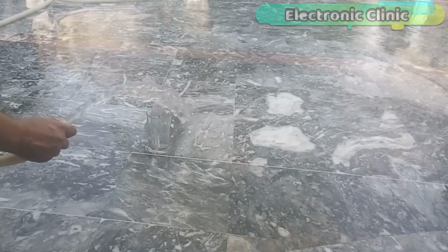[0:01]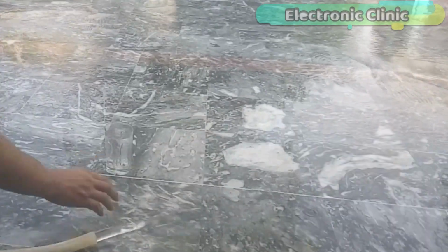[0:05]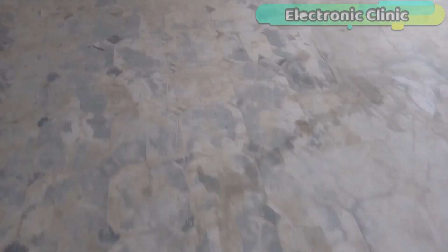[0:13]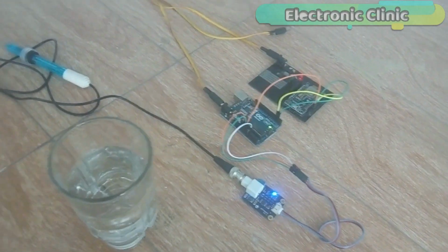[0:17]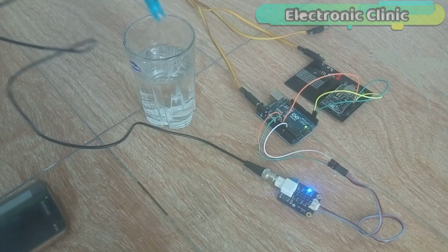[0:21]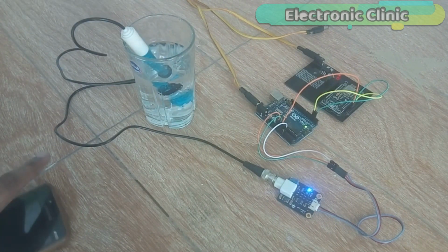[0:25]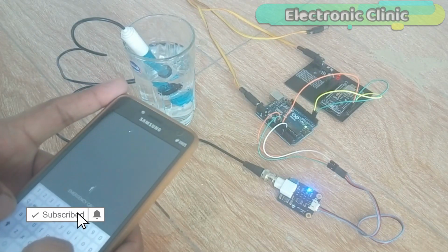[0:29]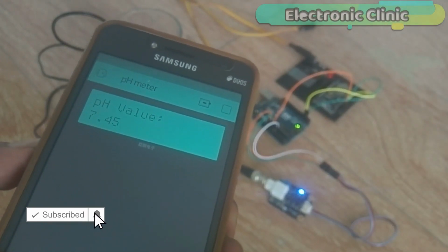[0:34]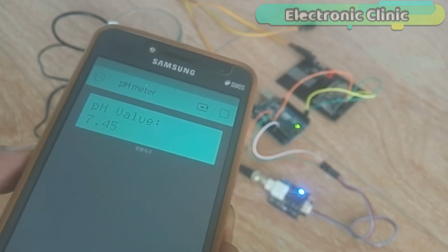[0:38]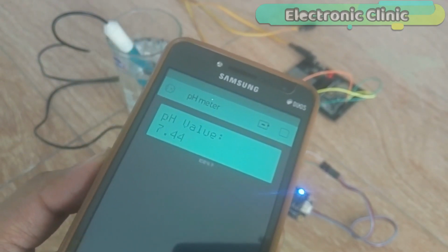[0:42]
In today's episode, you will learn how to make an IoT-based water quality monitoring system using Arduino, pH sensor, Nodemcu ESP8266 Wi-Fi module, and Blynk application. This is an IoT, Internet of Things-based project. The water quality can be monitored from anywhere around the world.
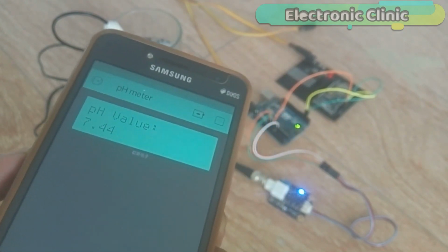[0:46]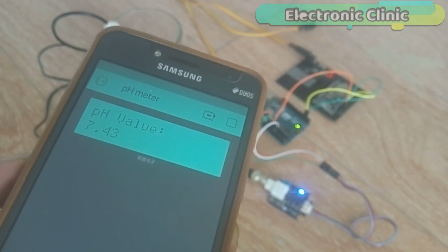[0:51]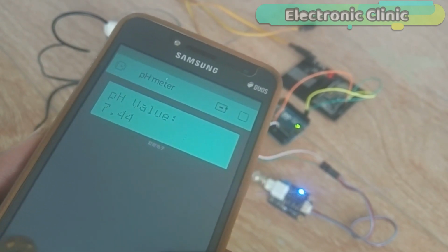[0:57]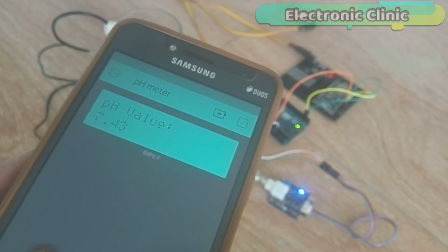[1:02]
In this episode, I will practically explain how to measure the pH value of the well water. And I will also explain whether the water under test is good or bad for health. In this tutorial, you will also learn how to use the 16x2 LCD widget in the Blynk application.
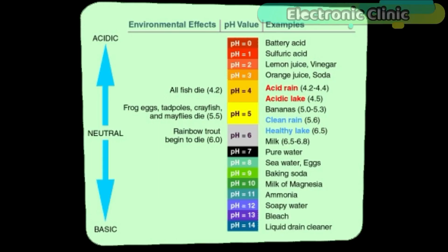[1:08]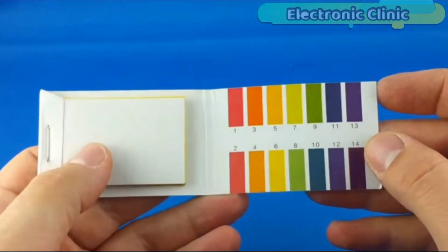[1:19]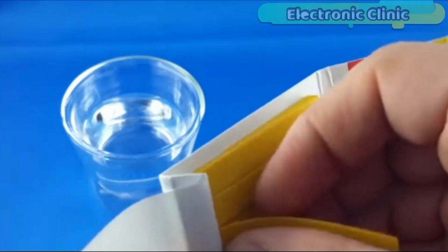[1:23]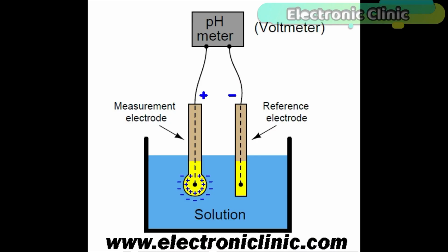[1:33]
This is version 2 of the pH sensor water quality monitoring system. While in version 1, I covered the extreme basics, like for example, what is pH, how a pH sensor works, how to measure the pH value of different liquids. In version 1, I also explained how to calibrate the pH sensor. So if you are using a pH sensor for the first time, then I highly recommend you first watch version 1 and then you can resume from here.
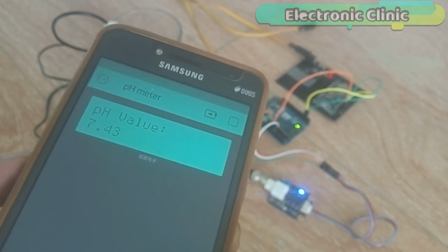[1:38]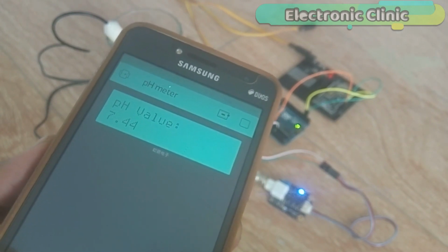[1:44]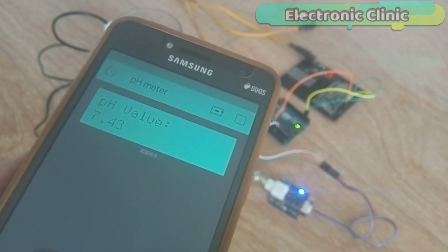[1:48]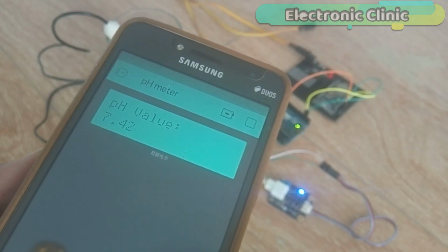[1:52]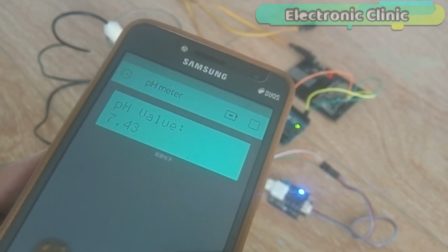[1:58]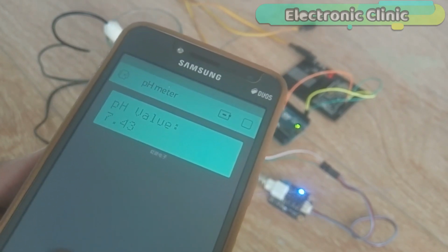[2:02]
In this episode, we will cover number 1, complete circuit diagram, number 2, pH sensor unboxing, number 3, pH sensor pinout, number 4, pH sensor and Nodemcu ESP8266 Wi-Fi module interfacing with Arduino. Number 5, Arduino and Nodemcu programming, and finally number 6, testing. Without any further delay, let's get started.
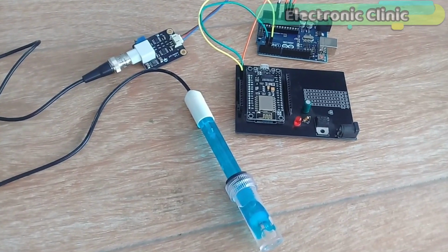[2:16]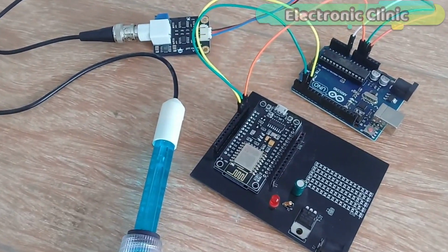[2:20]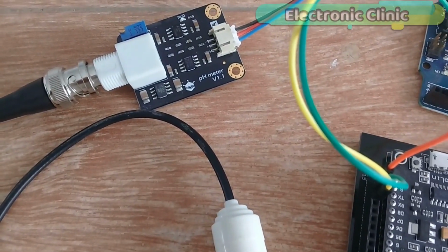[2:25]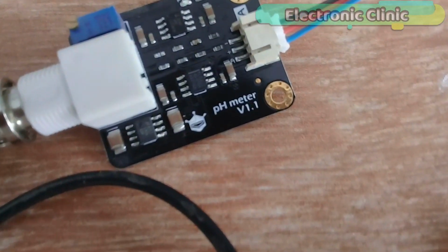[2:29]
This is the circuit diagram of the Nodemcu ESP8266 Wi-Fi module power supply. This schematic is designed in CadSoft Eagle 9.1.0 version. This is a 5-volt regulated power supply, which is used to power up the Nodemcu ESP8266 Wi-Fi module. This power supply is based on the famous LM7805 voltage regulator.
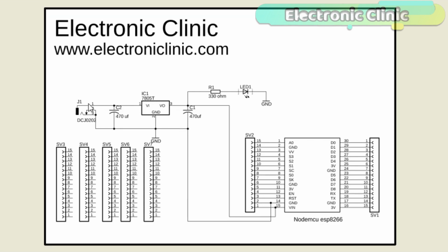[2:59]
J1 is the female power jack, and this is where we connect a 12-volt adapter, a battery, or a solar panel. Two 470 microfarad capacitors are connected at the input and output sides of the voltage regulator. A 330 ohm resistor is connected in series with a 2.5 volt LED. This is a current limiting resistor. The output of the voltage regulator is connected with the VIN pin of the Nodemcu ESP8266 Wi-Fi module, and the ground is connected with the ground.
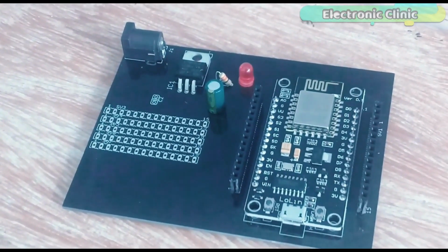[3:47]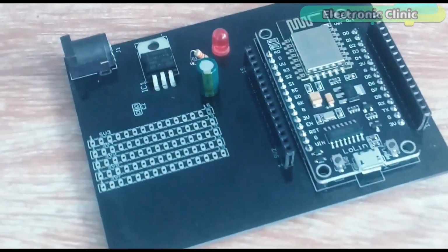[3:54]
SV1 and SV2 are the female headers. The connections of the Nodemcu module and pH sensor will be explained during the interfacing. This is the final power supply board designed for powering up the Nodemcu ESP8266 Wi-Fi module.
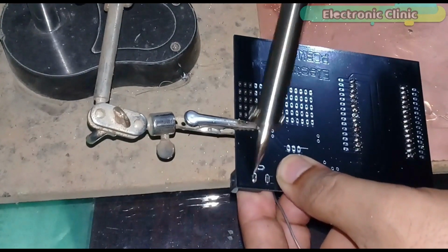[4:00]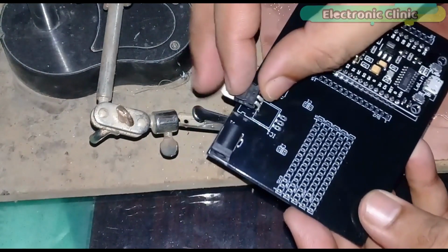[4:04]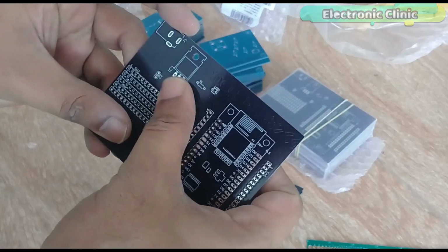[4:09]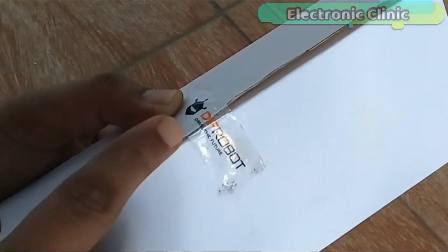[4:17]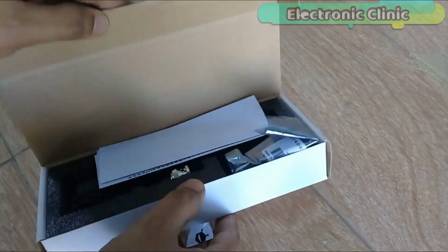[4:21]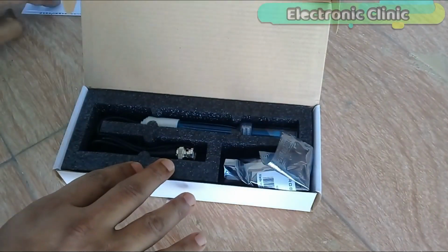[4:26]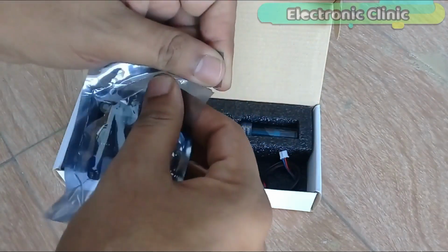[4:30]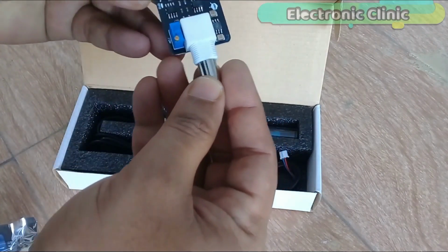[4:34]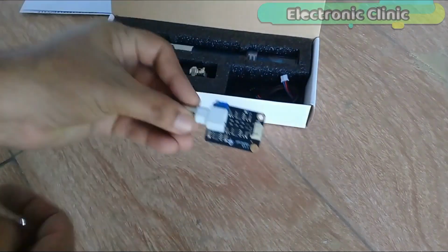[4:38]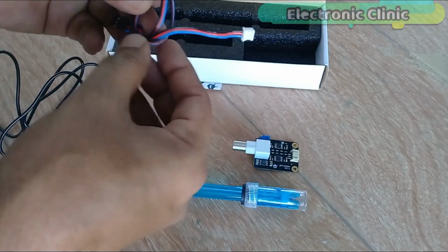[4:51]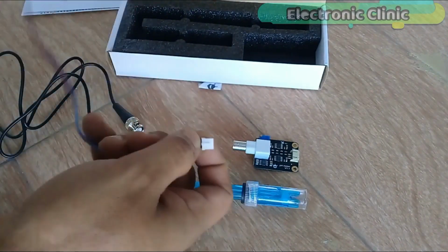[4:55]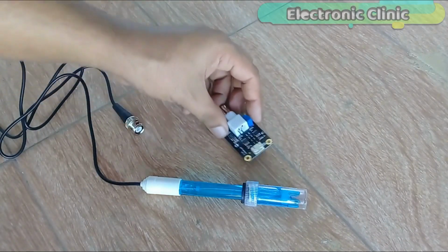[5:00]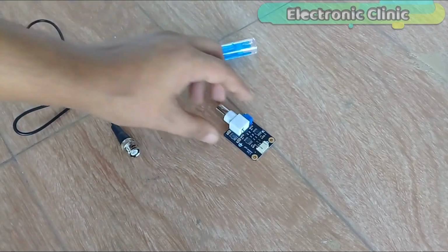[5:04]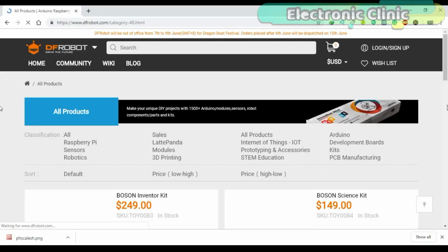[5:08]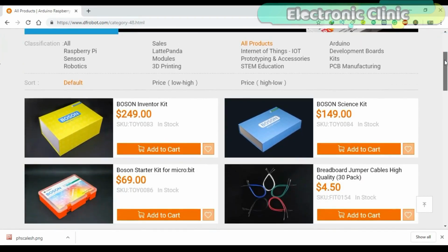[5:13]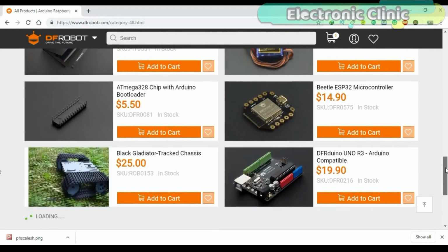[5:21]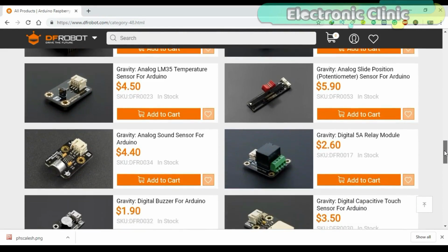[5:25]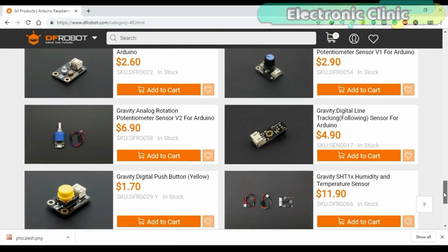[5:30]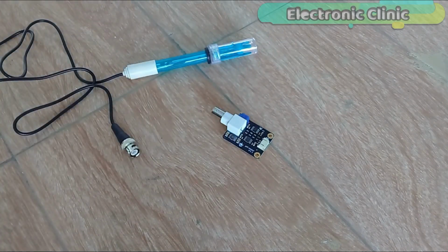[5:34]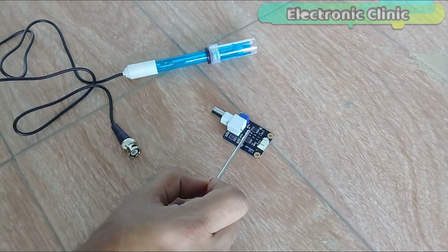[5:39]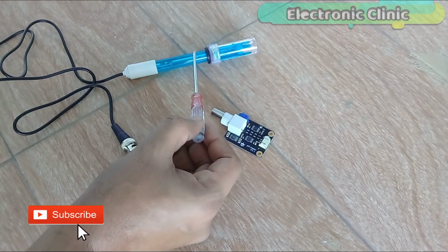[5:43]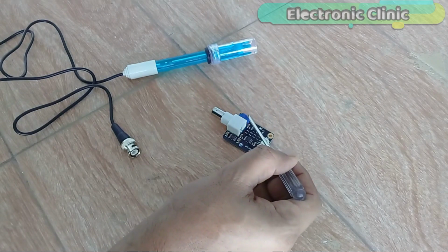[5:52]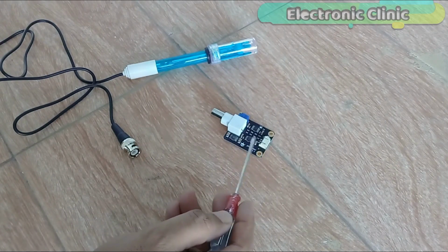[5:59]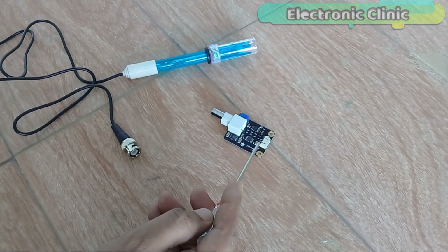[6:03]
This pH sensor kit is best for measuring the water quality and other parameters. It has an LED which works as the power indicator, a pH sensor, a BNC connector, a variable resistor which is used for the calibration, which I will explain during the testing, and a PH2.0 sensor interface circuit. Its interfacing with the Arduino is really simple.
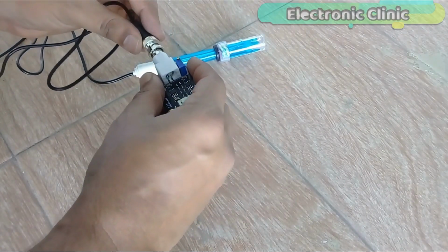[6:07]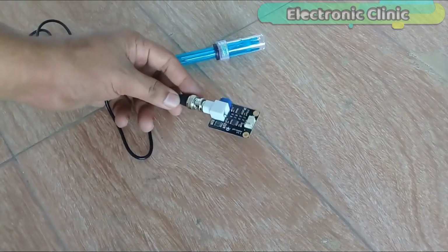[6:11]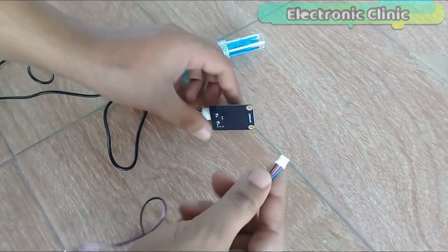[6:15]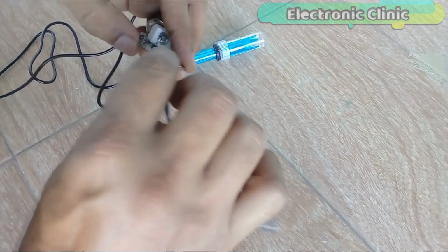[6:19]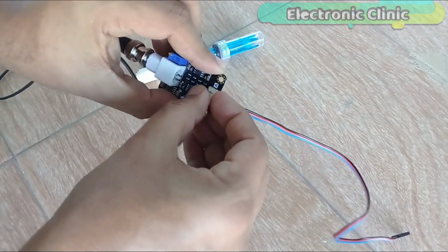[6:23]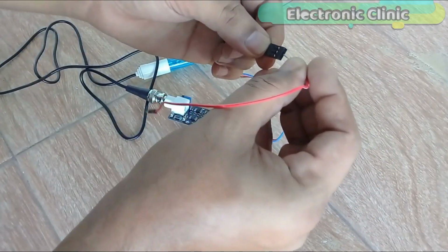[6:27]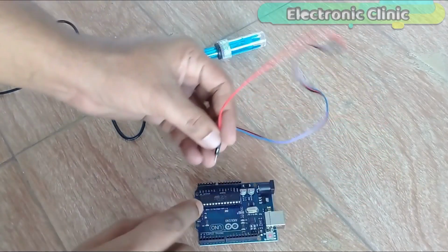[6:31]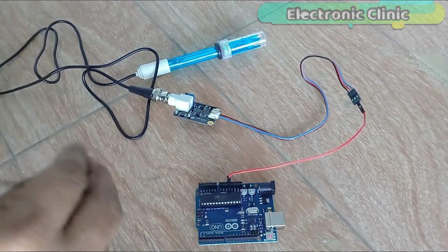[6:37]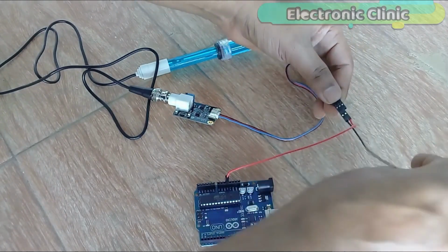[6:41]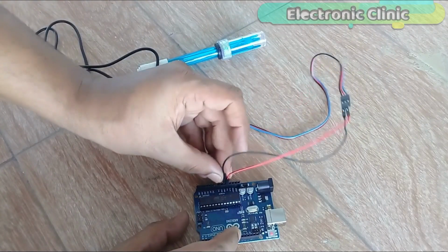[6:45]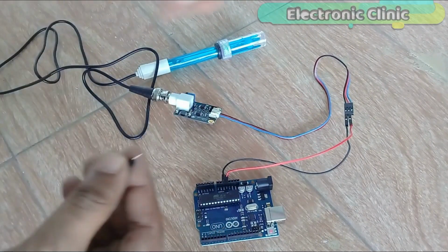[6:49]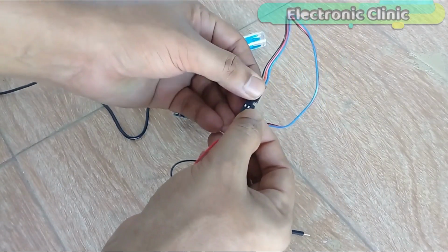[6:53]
Connect the red wire with the Arduino's 5V. Connect the black wire with the Arduino's ground. Connect the blue wire with the Arduino's analog pin A0.
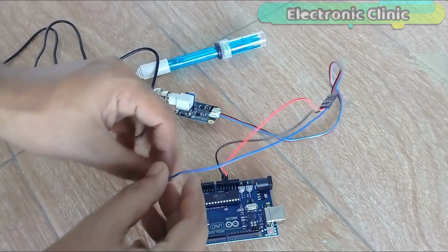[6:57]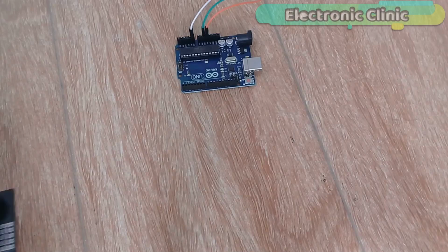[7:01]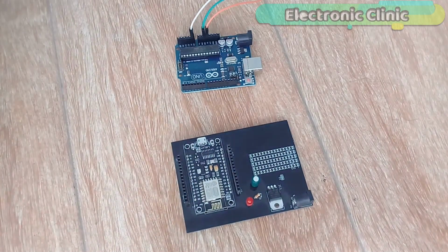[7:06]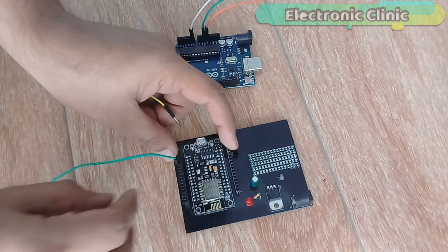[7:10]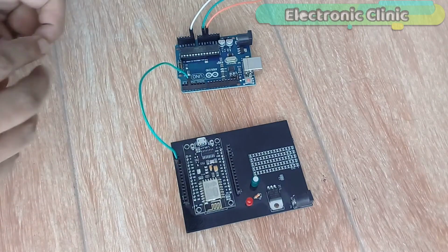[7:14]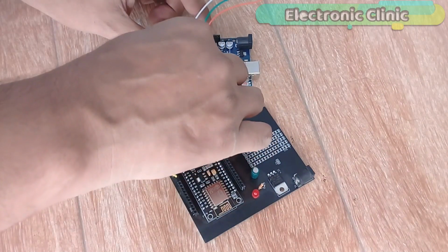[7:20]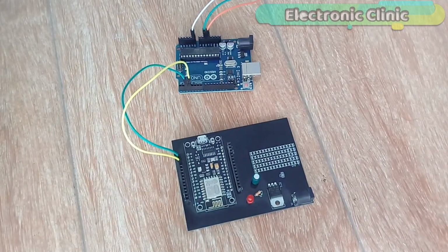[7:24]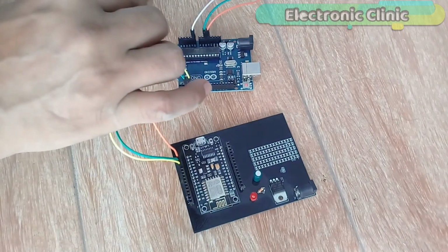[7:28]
Connect the TX and RX pins of the Nodemcu ESP8266 Wi-Fi module with pin number 2 and pin number 3 of the Arduino. Connect the ground pin of the Nodemcu module with the Arduino's ground.
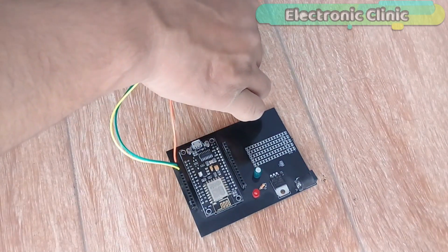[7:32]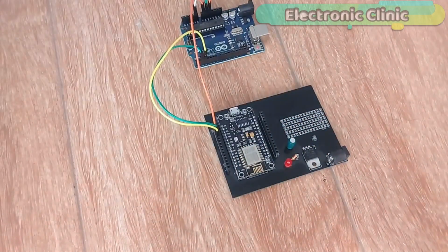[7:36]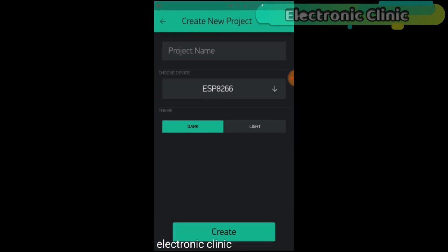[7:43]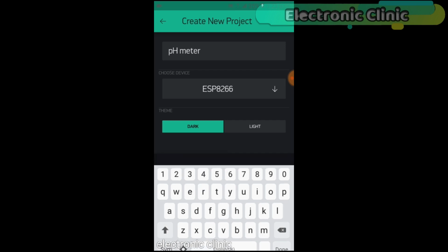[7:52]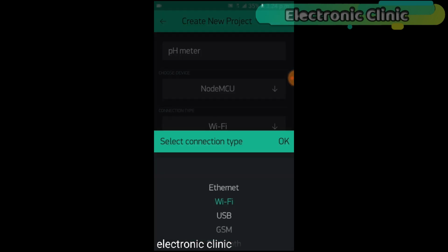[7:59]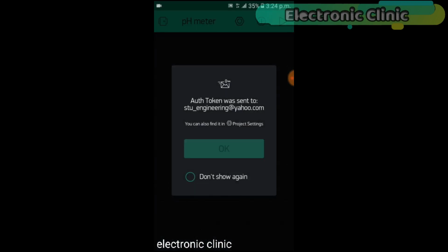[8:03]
First of all, open the Blynk application. Set the project name as pH meter. Click on choose device and select Nodemcu. Make sure you set the connection type to Wi-Fi. Then click on the create button. An authentication token will be sent to your email ID, which will then be used in the programming. Simply copy and paste it in the programming.
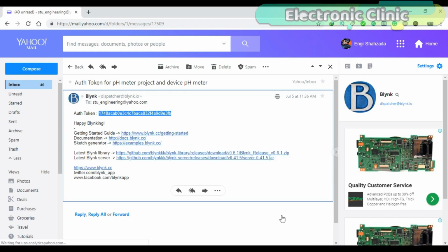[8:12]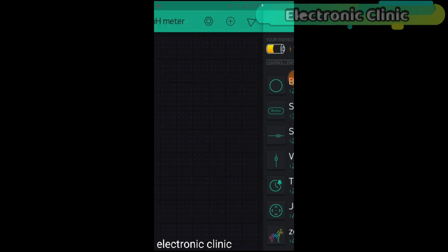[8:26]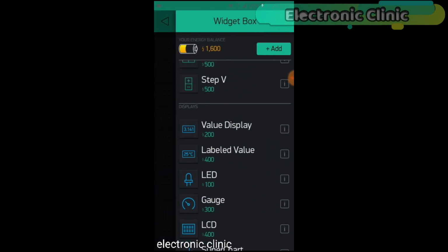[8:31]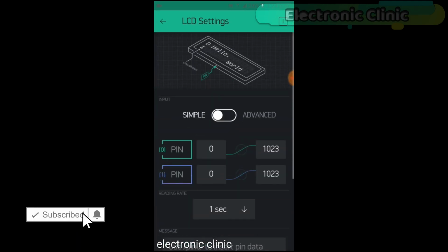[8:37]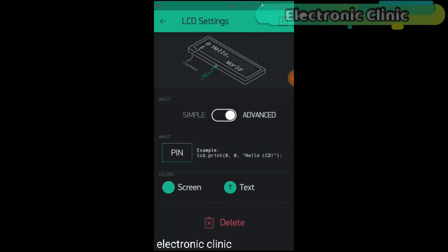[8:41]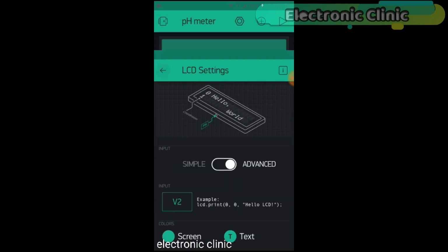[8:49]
Now click on the screen and search for the LCD widget and edit.
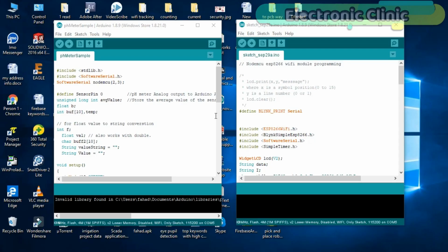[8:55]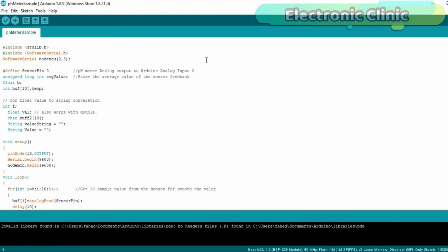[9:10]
Our application is ready, and now let's discuss the programming. In this project, two programs are used. This program is written for the Arduino, while this program is written for the NodeMCU ESP8266 Wi-Fi module. Let's first of all start with the Arduino programming.
This is the same program I used in version 1 of the pH sensor water quality monitoring system. This time I made a few changes. I added these two libraries. The stdlib.h library has a standard function which is used for converting the float value into the string value, while the softwareserial.h library is used for creating multiple serial ports.
As I always said, never use the Arduino's default serial port for communication with other devices. As you know, in Arduino we have only one serial port, which is on pin number 0 and pin number 1. The Arduino's default serial port should only be used for debugging purposes. Now the question is, if we are using the Arduino's default serial port for debugging purposes, then how will we connect the NodeMCU module with the Arduino?
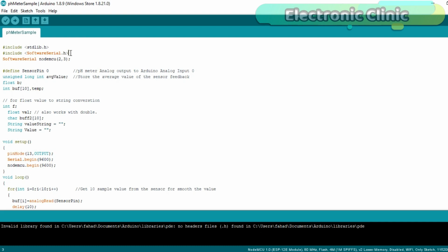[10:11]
Well, no worries at all. We can use the software serial library for creating multiple serial ports. So that's the reason I added the software serial library and defined a serial port with the name NodeMCU on pin number 2 and pin number 3 of the Arduino. So the NodeMCU module TX and RX pins will be connected with the Arduino's pin number 2 and pin number 3.
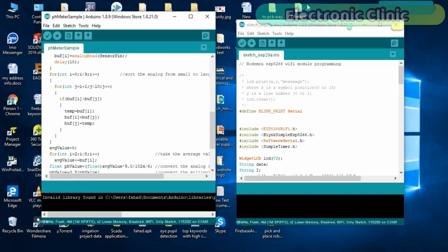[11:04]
Another change that I made to the program is I added this function which is used to convert a float value into the string value. Then I added the string value along with the comma which is used as the delimiter. Finally, the string message is sent to the NodeMCU module, and at the end we empty the string for new data. Now let's discuss the NodeMCU programming.
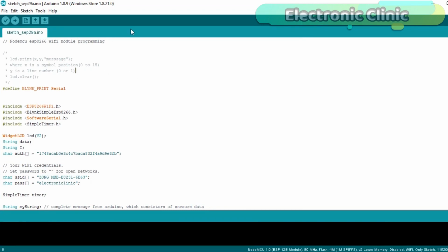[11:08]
Before you start the programming, first of all make sure that you download all the necessary libraries and you install the NodeMCU board. The link is given in the description. Data to the LCD widget is sent through the virtual pin V2. Then I defined two variables of the type string. This is the authentication token which was sent via email. This is the name of the Wi-Fi router and this is the password.
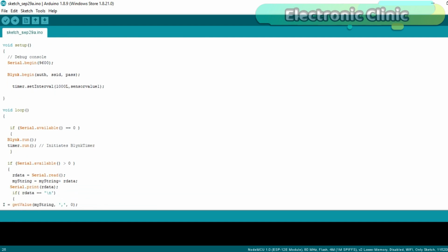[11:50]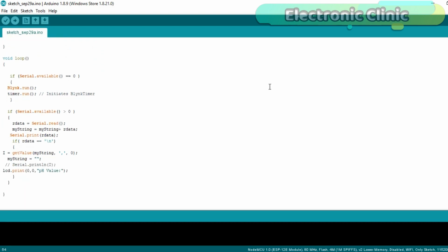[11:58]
Most of the variables and instructions used in this program are exactly the same as explained in my previous IoT based projects. Sensor value 1 is a user defined function and is executed every 1 second. Then starts the void loop function. This condition means if no data is received from the Arduino, then simply keep running these two functions. What this condition means, if the NodeMCU module has received data from the Arduino, then simply read the serial port and add the received character with the myString variable to make the complete message. This condition makes sure that the entire message is received.
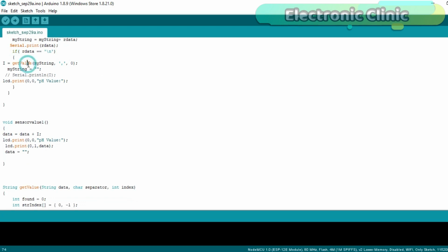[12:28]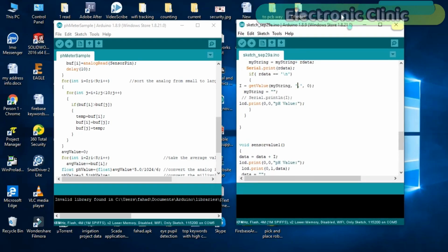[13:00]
GetValue is a user-defined function and is already explained in my previous tutorial, IoT-based car parking slots monitoring system. The purpose of this function is to split the string message using comma as the delimiter. The sensor value is stored in the variable I, and then finally we print some text on the 16x2 LCD widget and send the sensor value to the LCD which is printed on the second row of the LCD. So that's all about the programming. I have already uploaded these programs.
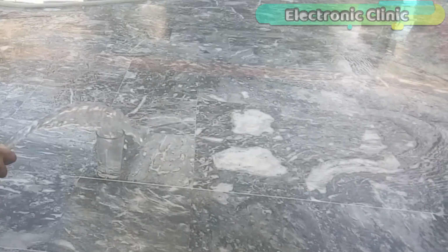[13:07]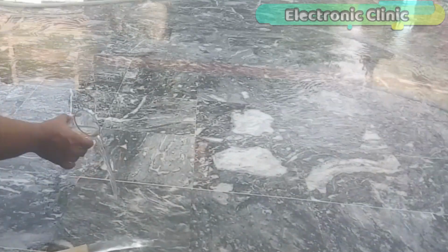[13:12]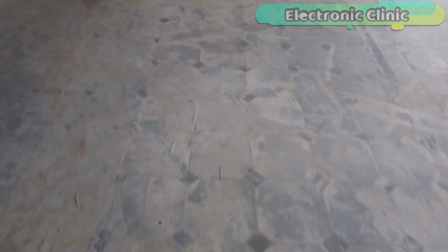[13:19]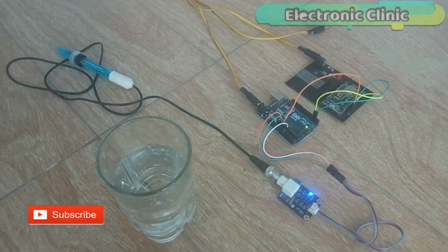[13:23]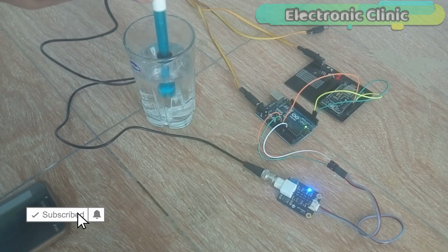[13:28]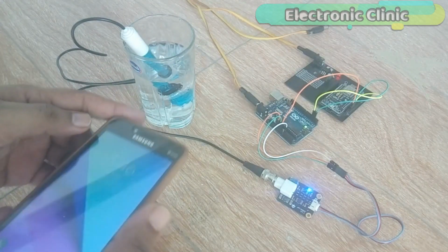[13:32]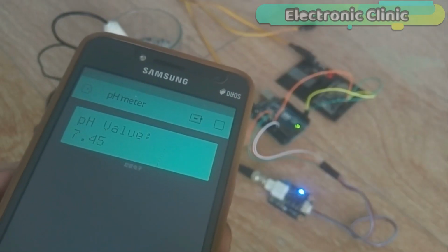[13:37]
Let's watch this project in action. Let's check the pH value of the well water. The pH of pure water is 7. In general, water with a pH lower than 7 is considered acidic and with a pH greater than 7 is considered basic. The normal range for pH in surface water systems is 6.5 to 8.5. And the pH range for groundwater systems is between 6 to 8.5.
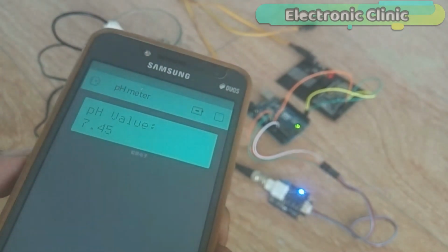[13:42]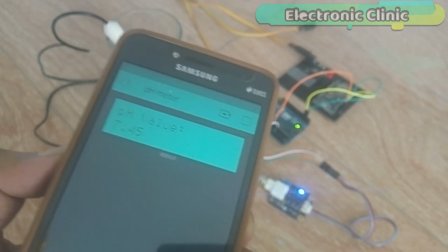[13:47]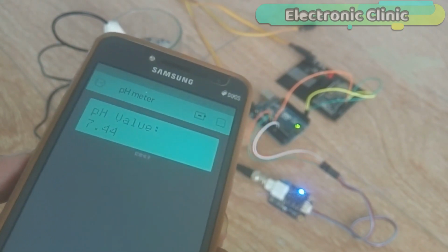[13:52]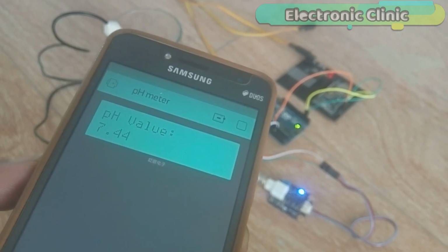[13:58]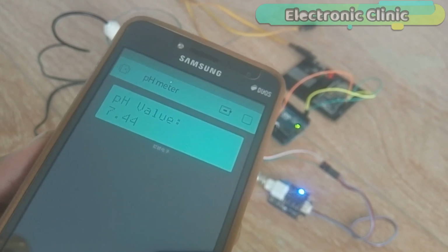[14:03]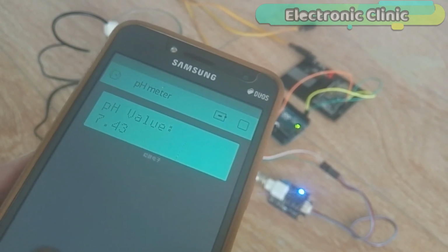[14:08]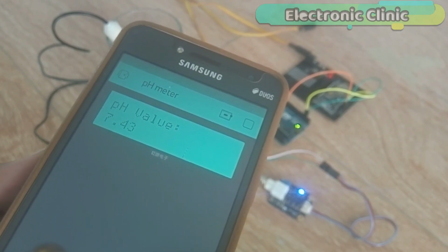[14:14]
Water taken from underground sources and not treated or modified in any way will have a pH between 7.2 and 7.8, which is the ideal range for good health. The water under test is in the ideal range and has a pH value of around 7.4, which is considered good for health. In my upcoming tutorial, I will upgrade this project and will use a waterproof temperature sensor with a pH sensor. This way we can monitor the water quality and temperature. I will practically perform some tests on the river water.